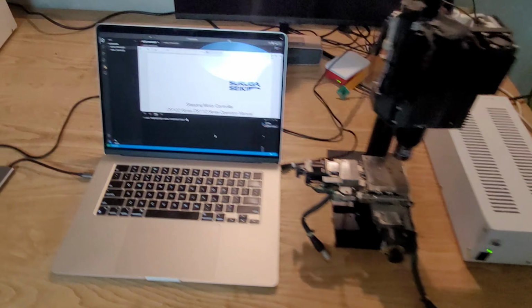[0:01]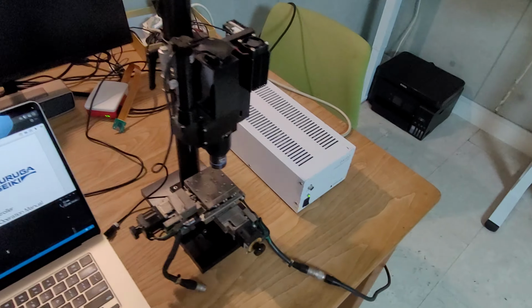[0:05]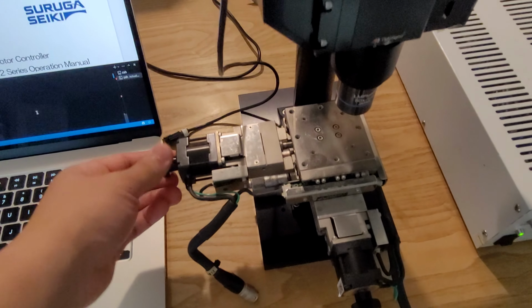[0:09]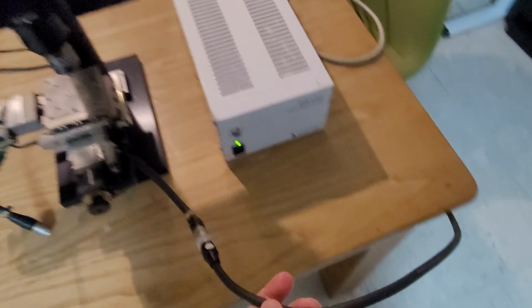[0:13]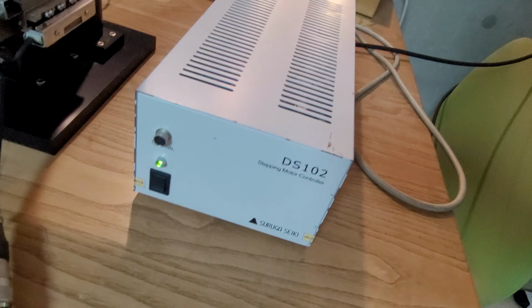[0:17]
Okay, this is my setup. I have my MacBook and this microscope, and it's got two motors, x-axis and y-axis, and only one of the motors is currently connected to the driver. It's a DS102 stepping motor driver. I connect it to the wire here,
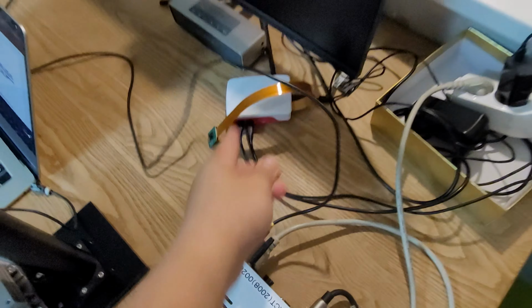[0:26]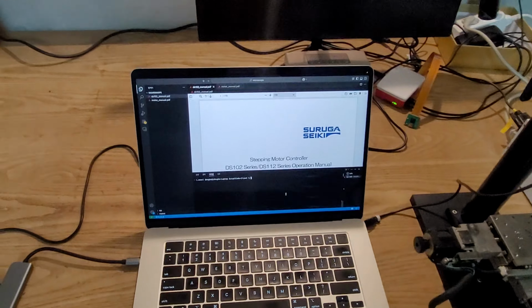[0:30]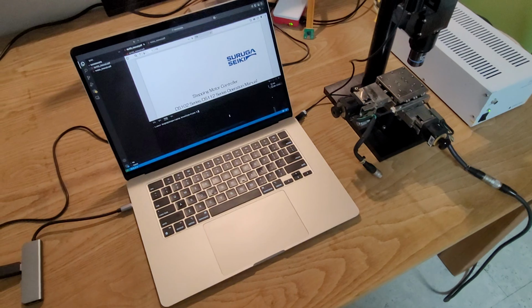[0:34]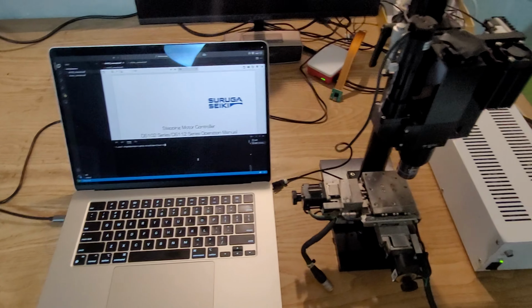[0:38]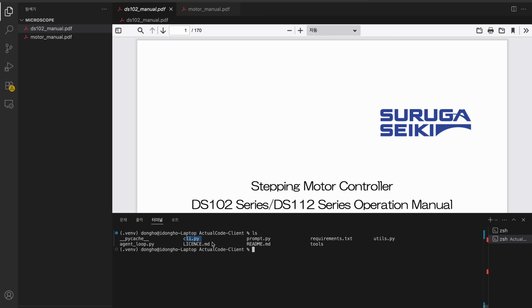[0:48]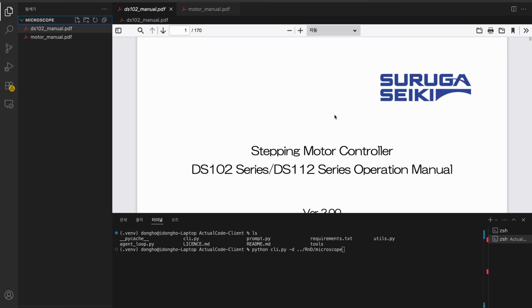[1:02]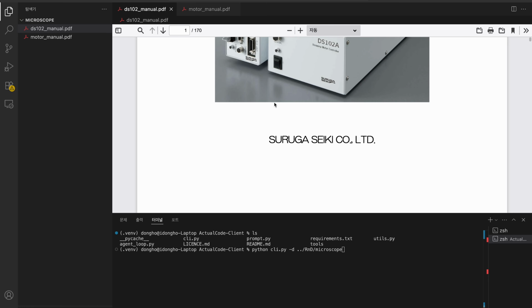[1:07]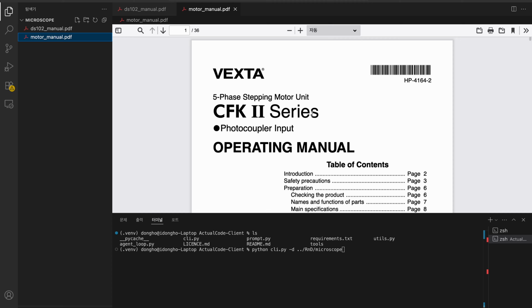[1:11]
and this is connected to the USB of my computer, and I'm going to ask the AI to write a graphical program to control this thing right here. Okay, first of all, I'm gonna run the program I created. I made a terminal version, and I can run it like Python, cli.py and directory. The argument points to the workspace, which is this right here, and I've put two manuals. This one is for the motor driver, and this is a manual for the actual motor itself.
And the AI is gonna try to read those PDFs, and it's gonna analyze them and hopefully create working code for them. So I'm gonna run it. It says what you want to build, and I'm gonna explain my current status. I have a microscope that has two motors connected that moves the bottom plate. Only one of the motors is connected to the driver right now, which is axis X. And I need to ask it to write a graphical program to control the motor. I'm also gonna explain that I provided the necessary manuals. I gave you the manuals in the folder.
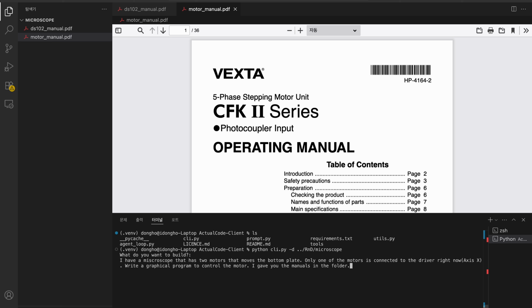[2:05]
And one thing that I noticed previously was that this motor's limit switches are a bit funky. They give some errors, so I'm just gonna say the motor's limit switches are a bit weird. Test them and show the status of the limit switches. It's because even when only one of the limit switches is triggered, the motor doesn't respond to commands, and those switches are not working as expected. So let's go.
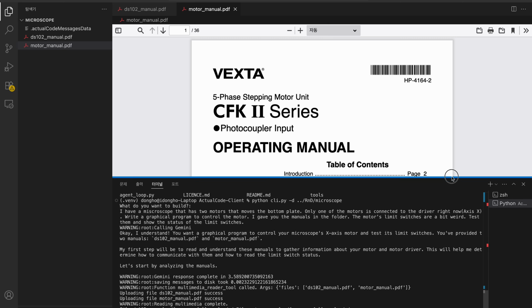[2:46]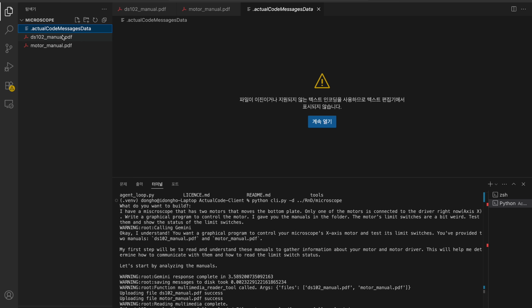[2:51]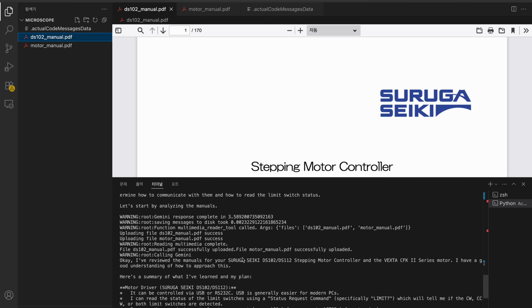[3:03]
And what it's gonna do is, this conversation data is saved onto a file, and by doing that, it's gonna save the messages so I can use them on later occasions. Okay, so what this is doing right now is, first, it understood that I provided the manuals right here, and it's gonna read and understand those manuals. So it called the multimedia reader tool I provided for the AI, and it correctly listed the file names. As you can see, they are correct.
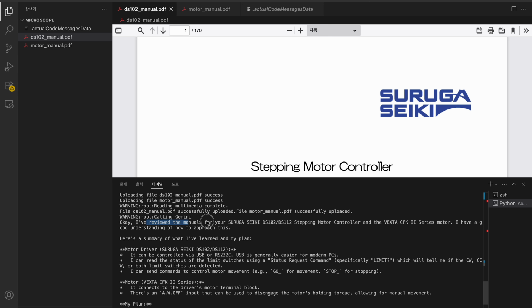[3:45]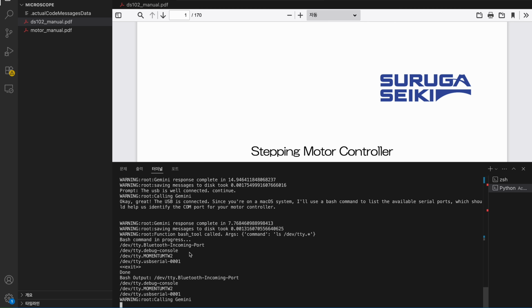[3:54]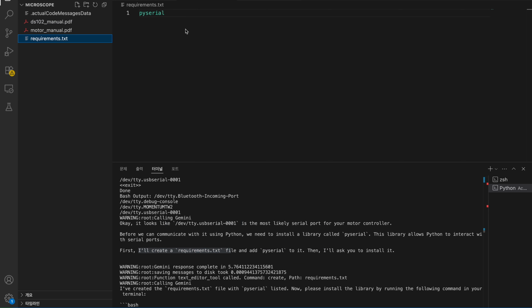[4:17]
What this tool does is automatically upload the PDFs, and the AI is gonna analyze them. I'm using Gemini for the AI because it handles large context, and multimedia files such as PDFs, videos, and photos are well supported. It reviewed the manuals, and it created a summary of what it's learned and its plan. Okay. It knew that I'm using macOS, and it's gonna use a bash command, another tool that I provided. It can run commands to, in this case, list out the available serial ports, and it did. It looks like this thing is most likely a serial port, and then it's gonna create a requirements.txt file. So it decided it needed PySerial.
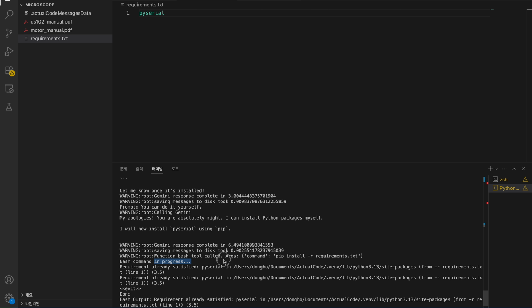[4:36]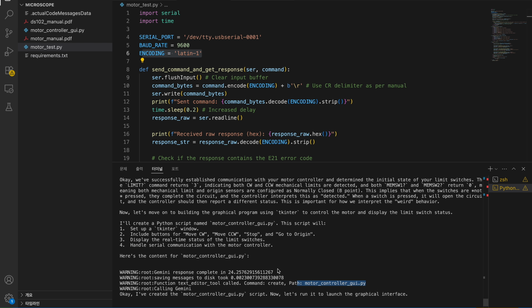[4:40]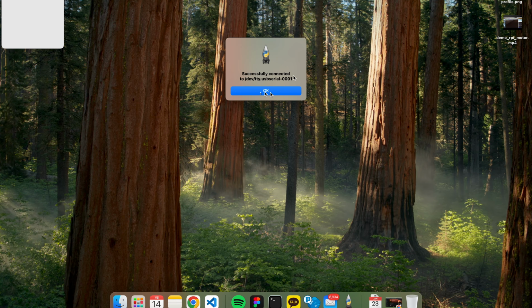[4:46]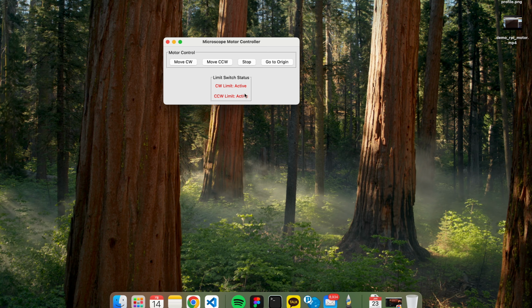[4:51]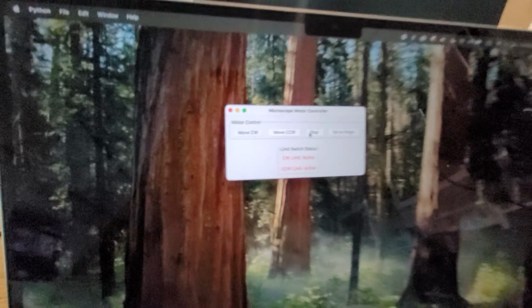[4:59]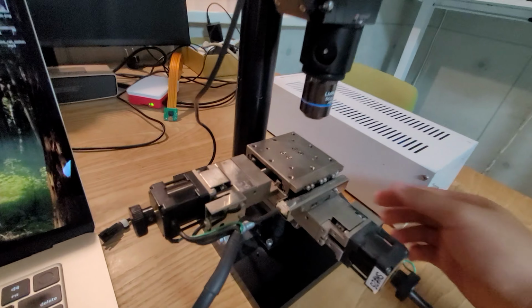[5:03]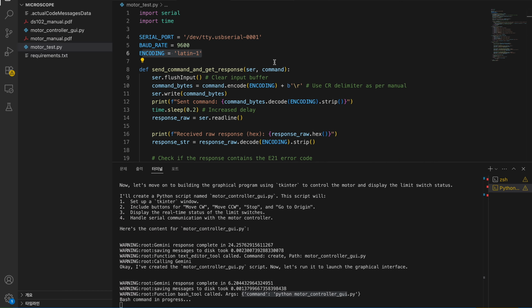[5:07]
Okay, it's asking me to install the library, but it can do it by itself, so I'm just gonna say you can do it yourself. I think it's gonna use the bash tool. Yes, right here, and it's running this command. Okay, it created something and ran it that automatically did something. Okay, wow. Both are active, which is weird. It's not moving even though I press these buttons. It's because, you know, those switches are a bit funky, and it's expected.
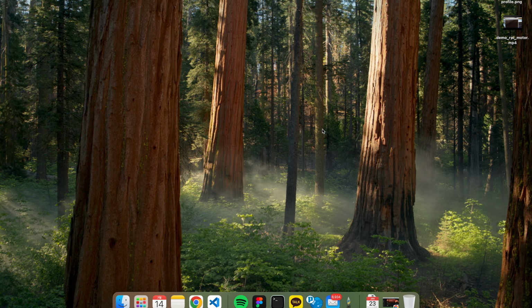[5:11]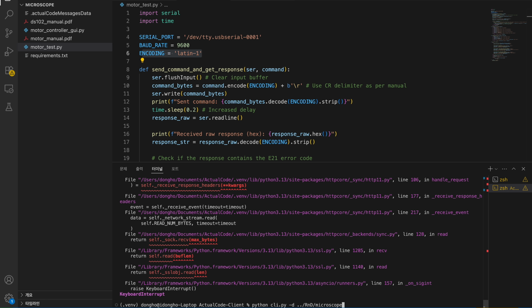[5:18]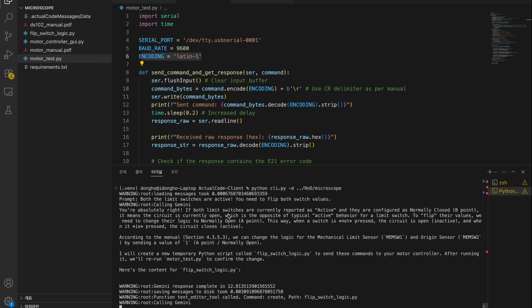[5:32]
From the previous testing, I needed to flip the bits in the limit switch. I'm gonna tell it to do that. Both limit switches are active. You need to flip both switch values. And it read the manual, so according to a section in the manual, you can change the logic for a limit sensor. Okay, I think it created another script to flip the switch values, and it automatically reran the test script. So I think that's gonna verify if the setting has been successfully changed.
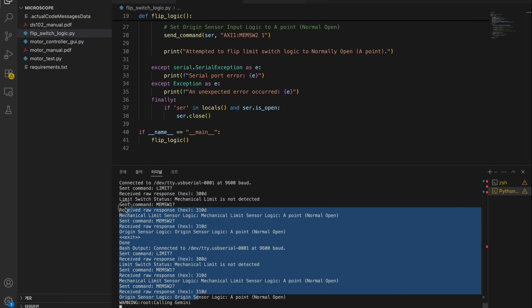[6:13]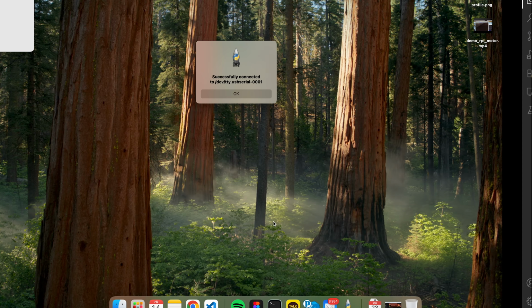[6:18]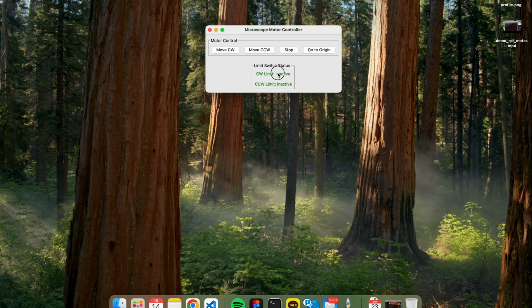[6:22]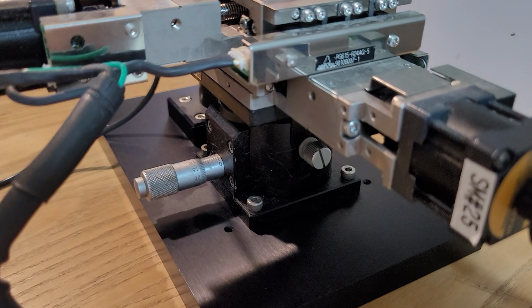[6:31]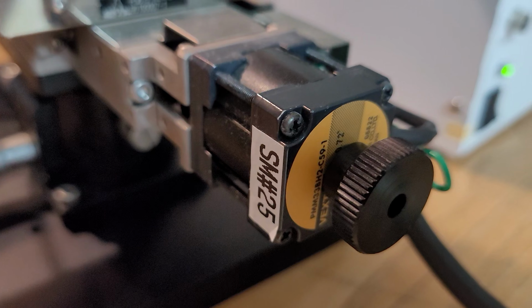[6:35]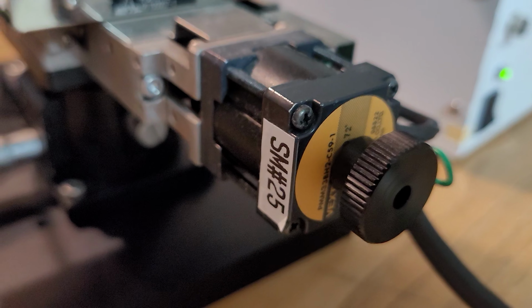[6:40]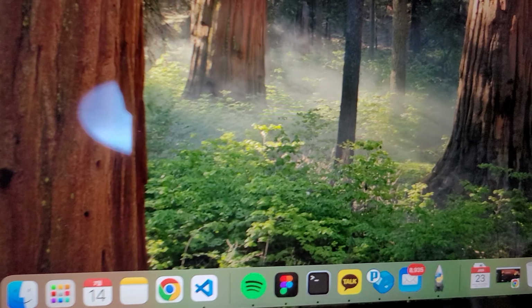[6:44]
This is the response. Okay, so it automatically went to here. Okay, limit is both inactive. I'm gonna try to press them. Okay, it's moving. It is moving, but it's moving very slow.
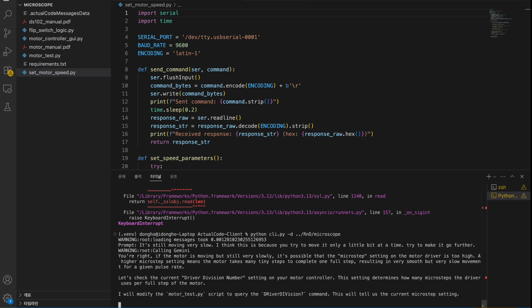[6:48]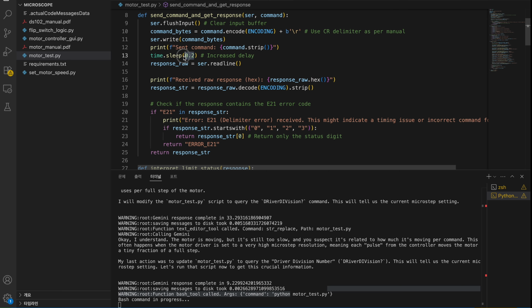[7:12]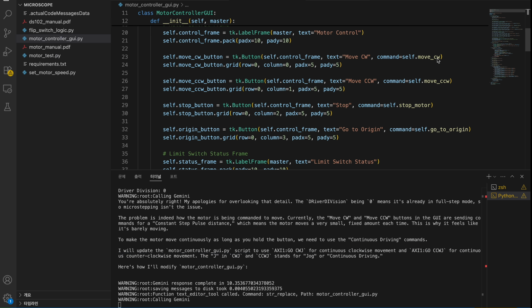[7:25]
Okay, it's possible that the microstep setting on the motor driver is too high. Okay, let's check the current driver division number. Okay, cool. It's running some test functions. Driver division. It has a 0.2 second delay, so I think that's the reason this script is taking a long time to run. Driver division is 0. Okay, it's gonna do continuous clockwise movement and counterclockwise movement. Okay, let's see. Self dot move counterclockwise.
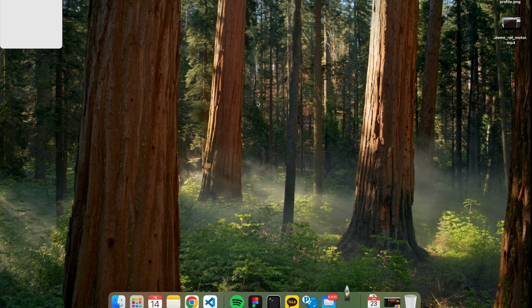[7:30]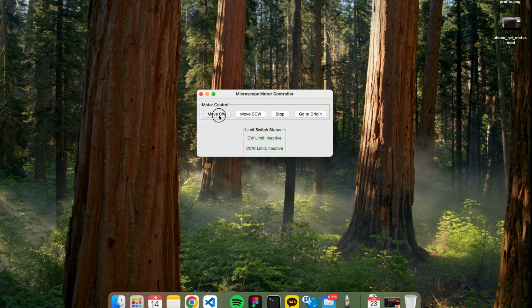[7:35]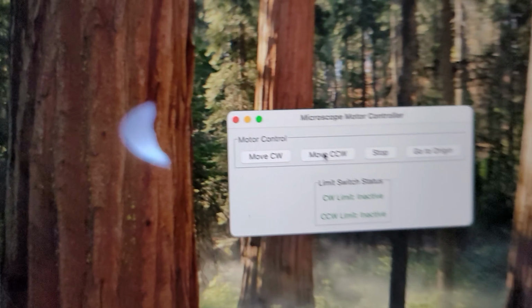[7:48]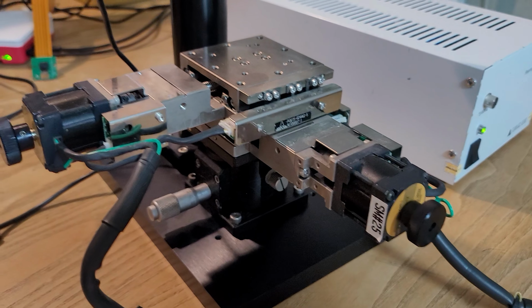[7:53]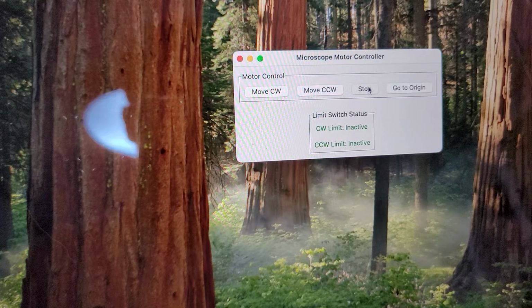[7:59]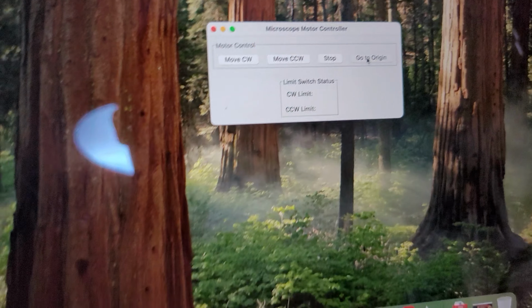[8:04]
Okay, let's try it one more time. Wow. Okay, it's moving. Things are working. Move counterclockwise. That's very cool. It's working. Okay. Stop. Go to origin maybe. Okay, that doesn't work. That's very cool. Okay, stop. Origin. Okay, that doesn't work.
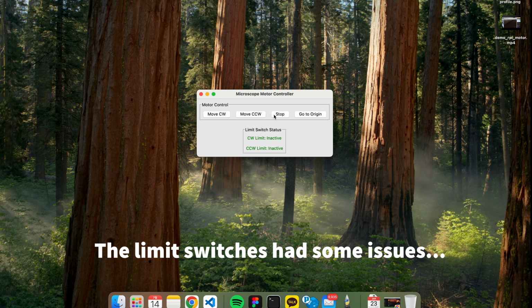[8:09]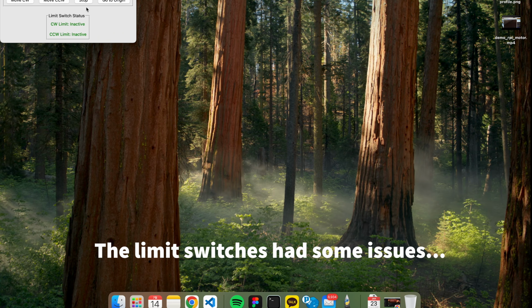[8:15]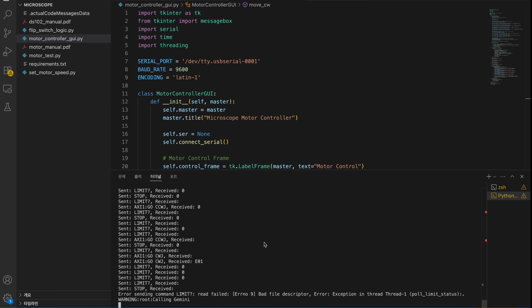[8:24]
So the reason it would continue is that the first time it just stops. Okay, so we can test. Okay, let's see if this time works. Moving. Let's do it until 50. It doesn't stop. So yeah, there are features to check before. There are issues. So limit switch, ignore that, and just make absolute.
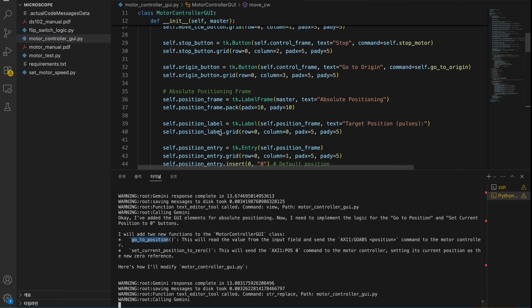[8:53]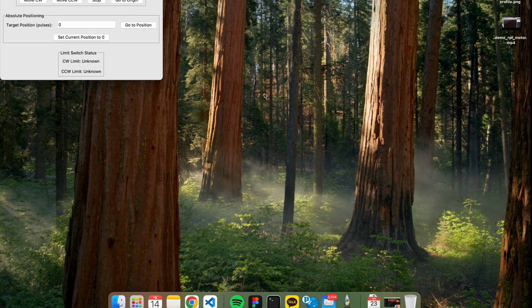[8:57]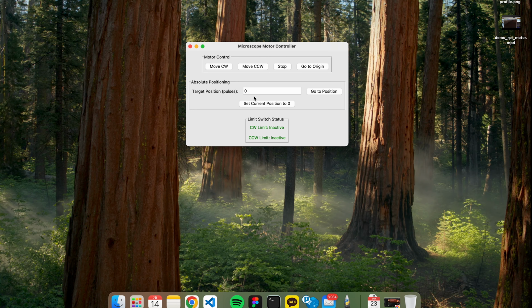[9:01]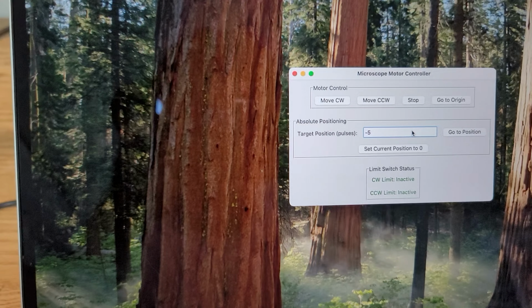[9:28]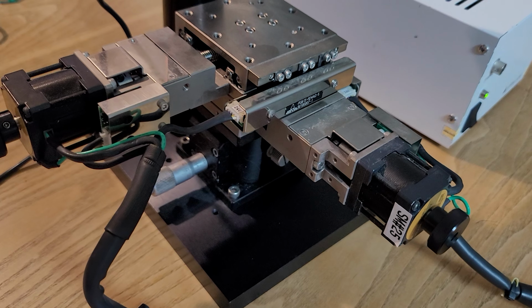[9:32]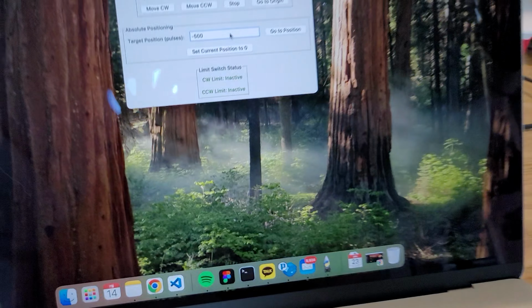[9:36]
Okay. It keeps adding some stuff in. It made a go to position function, which is this thing. Okay. It added some changes to the GUI. Set current position to 0. Let's try 100. Okay. It's working. So let's say I wanna go to position 1000, and I hit go to position. How about minus 500 and go to position. Okay, it works. It works really well.
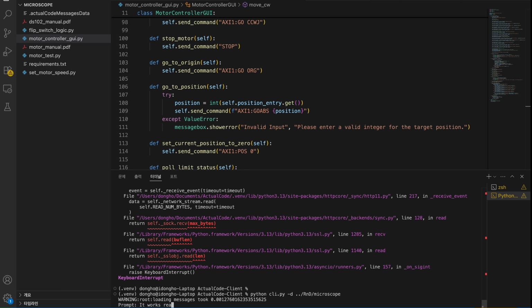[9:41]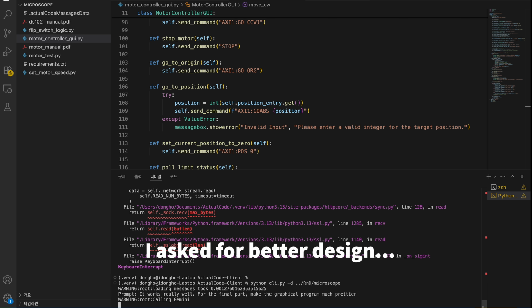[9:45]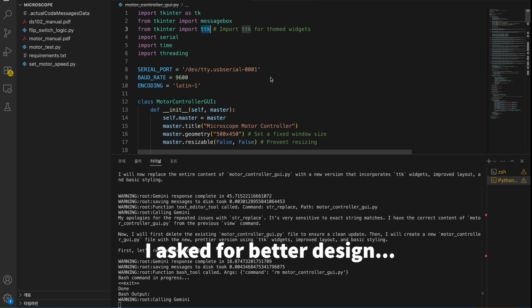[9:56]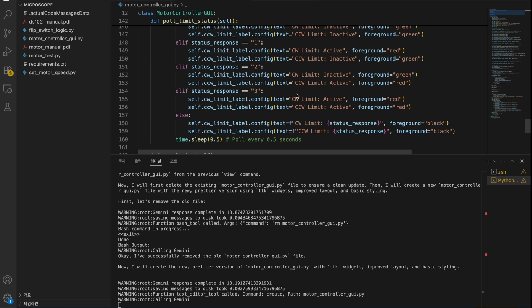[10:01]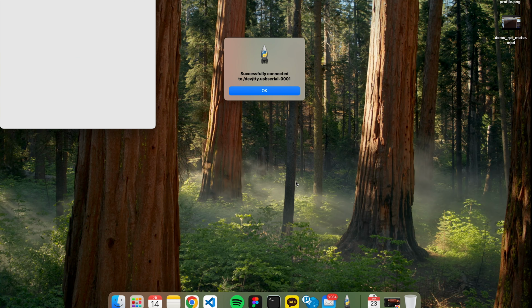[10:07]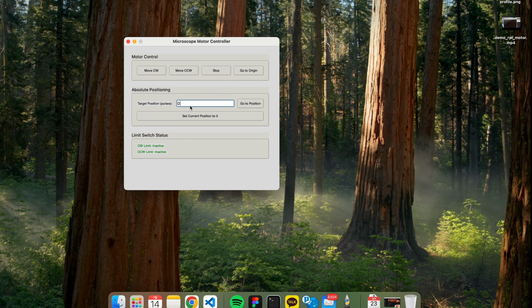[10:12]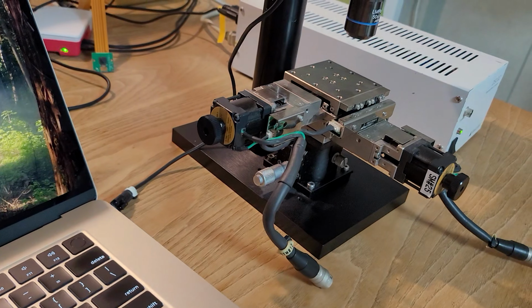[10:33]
I guess because for new file this, I disabled the version of files that exist, so I deleted it and freed it. Cool. Okay. Okay. Hopefully, it works. 100. Okay. 1,000. Works.
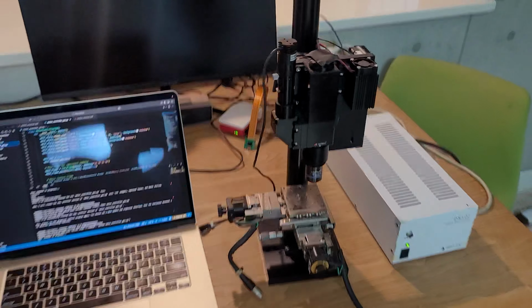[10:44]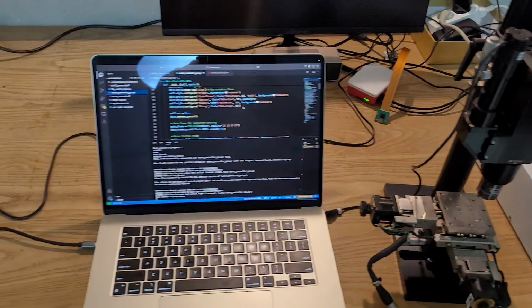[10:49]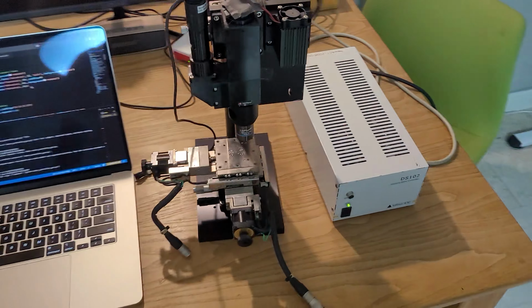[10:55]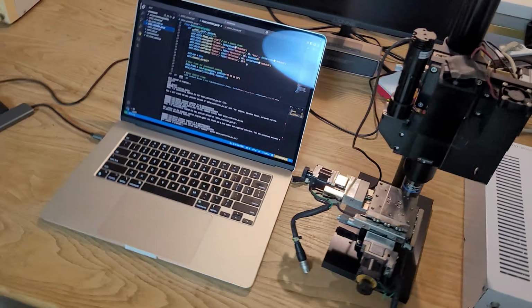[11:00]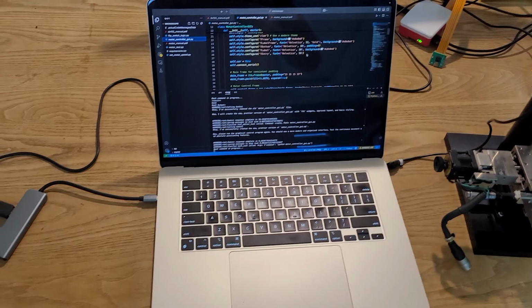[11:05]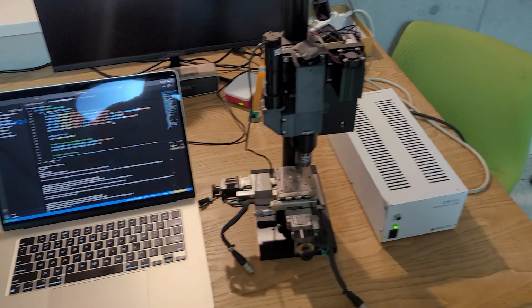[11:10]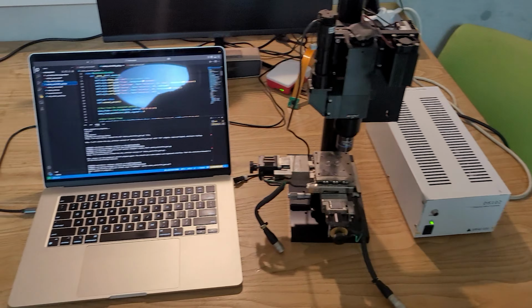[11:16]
Okay. So yeah, it works, and I was able to get this done within like an hour, which is very fast for moving from not knowing anything about this hardware to getting runnable code. So yeah, very cool, very cool. I'll put the link to the GitHub repository of this AI agent, so you guys can try it for yourself. And yeah, overall, I'm very satisfied with the result.